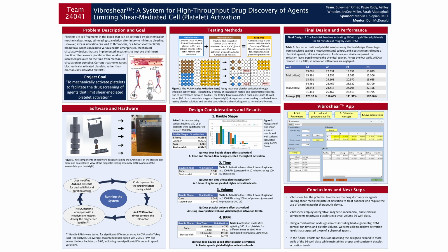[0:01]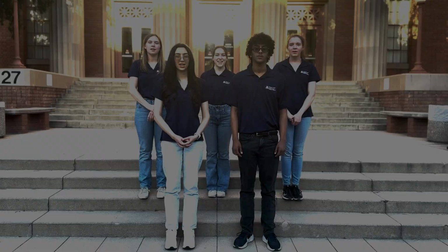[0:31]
Sully Elmer. I'm a biomedical engineering student, and I'm the team lead for this project. I'm Paige Rudy. I'm a biomedical engineering student, and I'm the procurement lead. I'm Ashley Wheeler. I'm a biomedical engineering student, and I'm the software lead. I'm JC Miller. I'm a biosystems engineering student, and I'm the experimental lead. I'm Farah El-Karaguli. I'm a chemical engineering student, and I'm the chemical lead. And we're Team 24041.
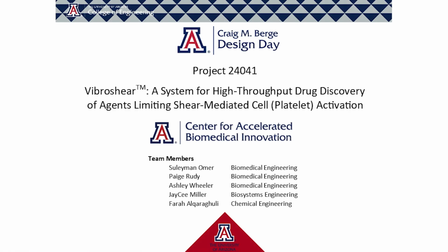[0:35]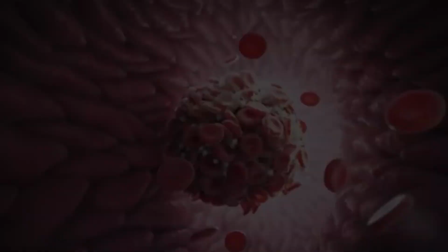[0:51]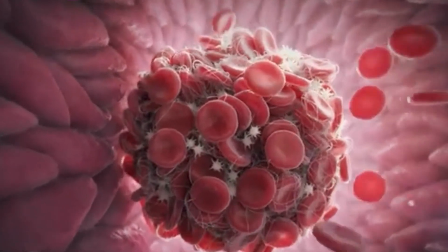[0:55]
JC, what was Team 24041 tasked with this year? We were tasked with creating a device for high-throughput drug screening of agents targeting mechanically activated platelets. Can you answer a couple questions about it? Sure. What are platelets? Platelets are cell fragments in blood, and platelet activation causes blood coagulation after an injury.
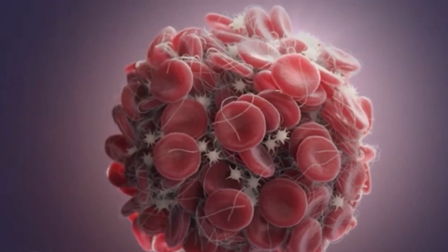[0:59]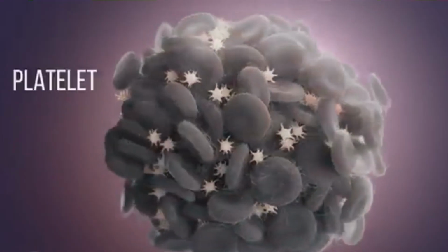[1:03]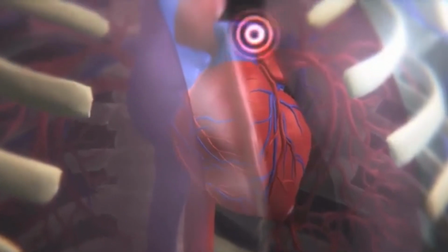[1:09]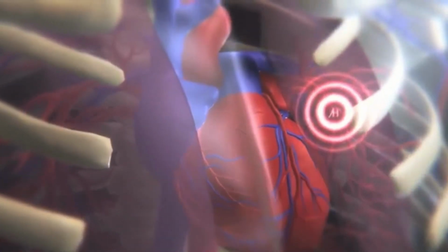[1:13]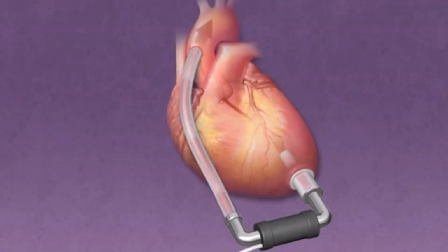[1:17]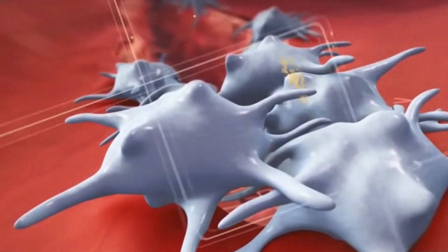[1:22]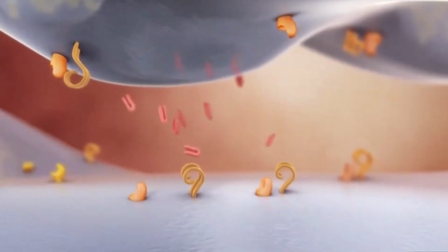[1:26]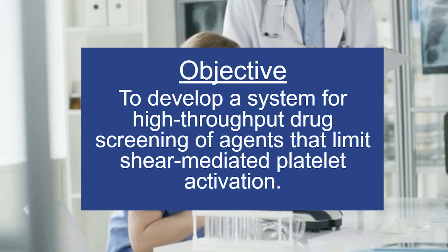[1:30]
Why is Team 24041 trying to mechanically activate platelets? Because shear-limiting drugs currently on the market only target biochemically activated platelets, and we want to allow lab technicians to assess the efficacy of drugs that target mechanically activated platelets. Thanks. Let's go over some specifics of the system.
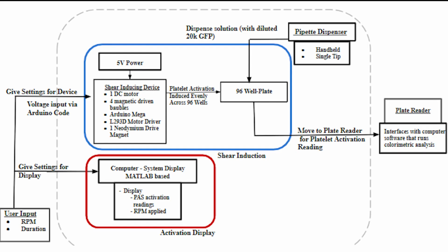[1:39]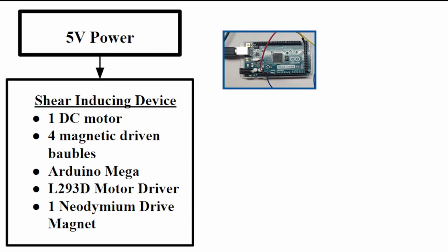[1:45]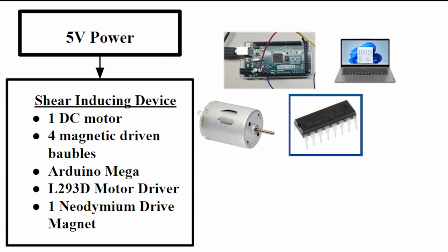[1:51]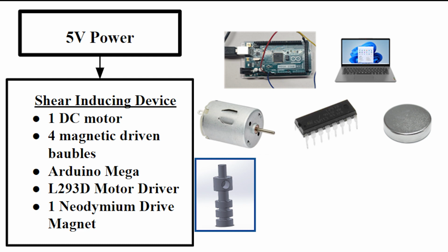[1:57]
There are two main components to the system, including the shear induction mechanism and the activation display. Starting with the former, the device consists of an Arduino Mega that interfaces with the user's laptop and device code, powering a DC motor through an L293D motor driver. Each motor is equipped with a neodymium drive magnet that induces rotation of the four magnetic bobbles suspended by ball bearings into the wells of the 96-well plate.
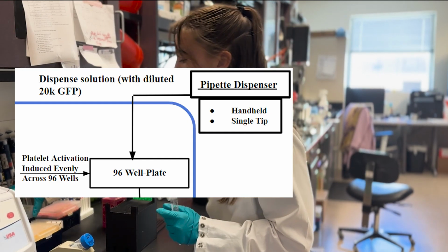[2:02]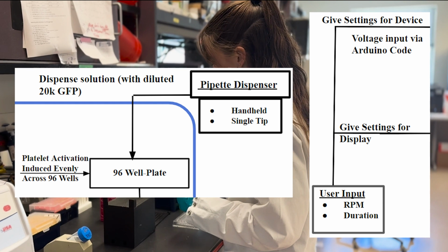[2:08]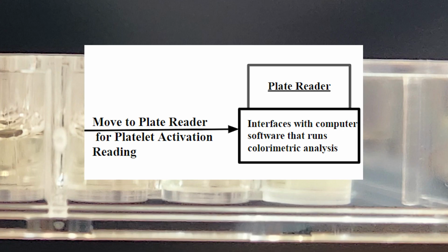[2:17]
When preparing to run the system, platelets are loaded into the wells using a handheld pipette, and the user will input RPM and run duration variables into the Arduino IDE code on the lab bench laptop. Testing is initiated by running the code. To read the level of platelet activation, the user should follow the steps of the platelet activation state or PASS assay, a colorimetric assay that JC will describe in a few minutes.
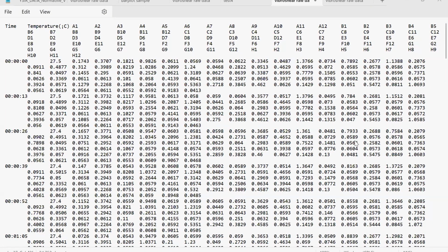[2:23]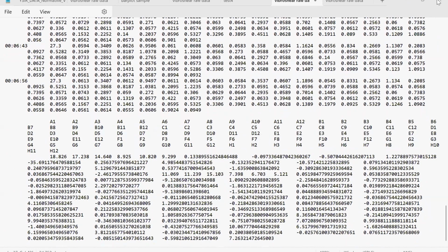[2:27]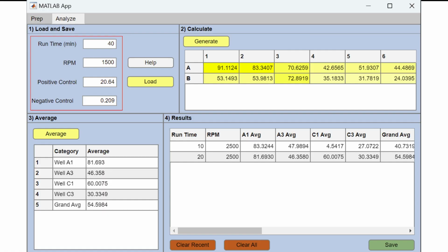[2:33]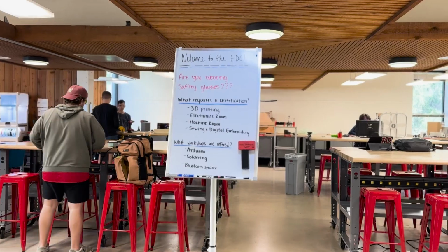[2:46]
At the end of this process, a plate reader will read the activation levels and the data can be exported as a TXT file. The data from multiple runs can be processed using the GUI, a MATLAB app. Users can input parameters including RPM, time, and positive or negative control readings. The app includes functionalities for loading raw data, normalizing and calculating raw and average activation levels, and saving manipulated data for further analysis. Now let's head over to the EDC to check in on Sully.
The EDC is where we fabricated the mechanical assembly of our Vibroshear system. Most of the physical components were manufactured through PLA 3D printing here. Let's take a close-up at each component.
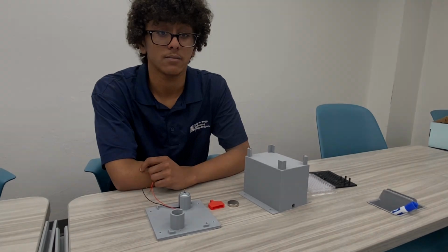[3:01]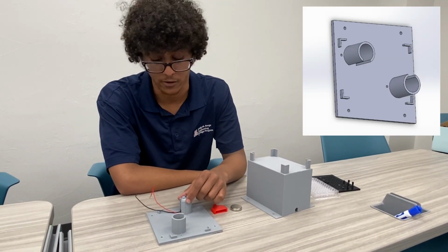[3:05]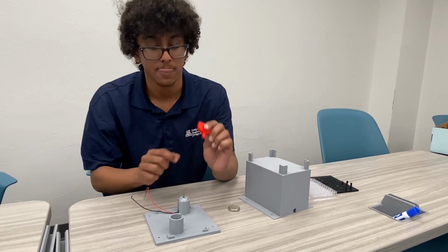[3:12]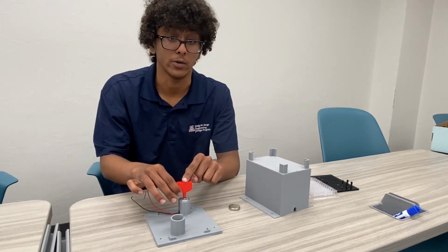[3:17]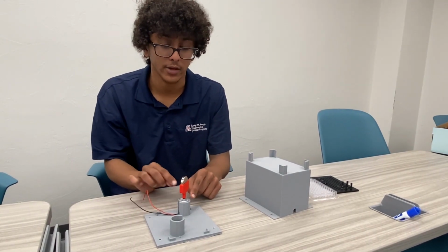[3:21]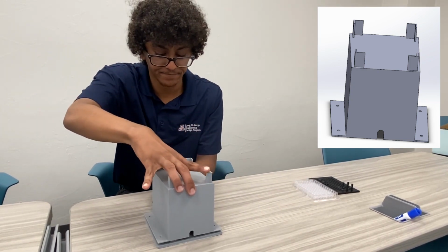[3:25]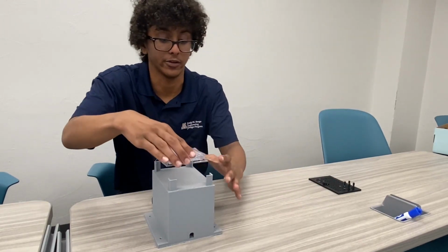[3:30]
Here's a magnetic stir housing fit with the bottom piece containing slots for the motors and wired connections to a breadboard. To attach the neodymium drive magnet to the motor, an external piece was designed with a hole cut out to fit the output shaft of the motor, and this attachment piece contains a tightly tolerant open space to house the drive magnet. Here's what the motor magnet assembly looks like. Naturally, there's also a top component to enclose the housing with ridges along the corners of the top that securely carry the 96-well plate during the device's use.
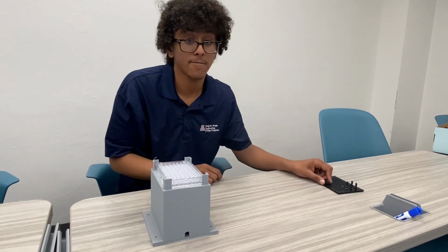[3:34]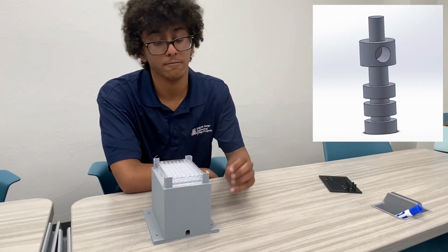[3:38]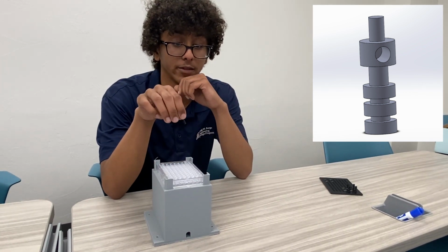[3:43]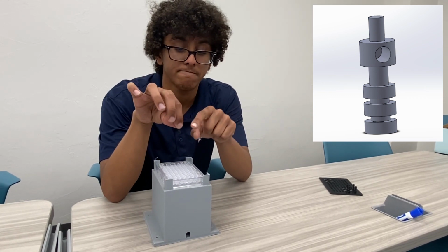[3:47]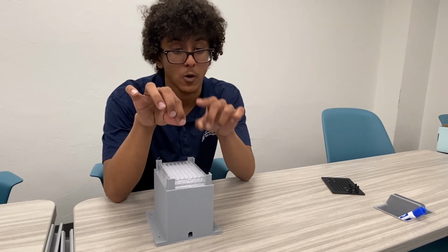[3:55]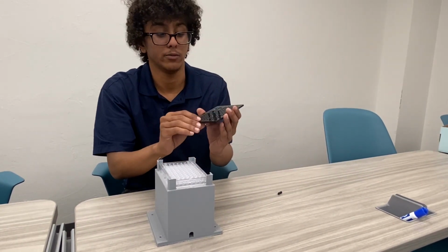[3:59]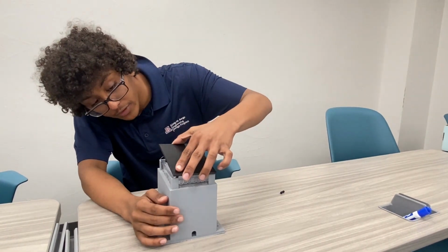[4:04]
Outside of the housing, something has to respond to the drive magnets to impart shear in the fluid within the wells. That takes us to the spinning bobble piece, responsible for mechanically agitating platelets. After several prototypes, here's the final model used for the bobble, 3 discs stacked on top of each other with space between to trap the fluid within. In cylindrical shape to maximize surface area, ensuring abrasive collisions with the surface of the piece consistently. There are 4 of these bobbles embedded within the plate lid, and here's how the whole assembly comes together.
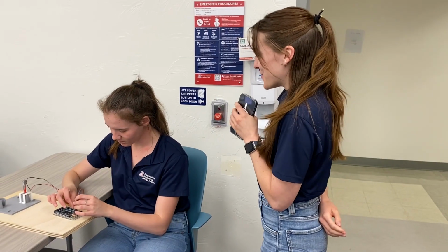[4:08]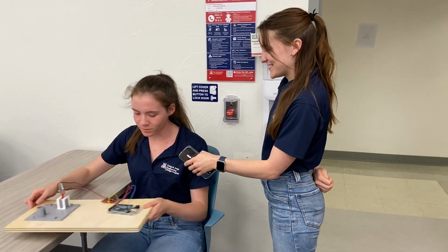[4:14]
Hey Ashley, what are you working on? I'm actually working on the electrical components of the Vibroshear system. Oh wow, can I see more? Yeah, let me show you. Alright, let's go into how we get this device up and running.
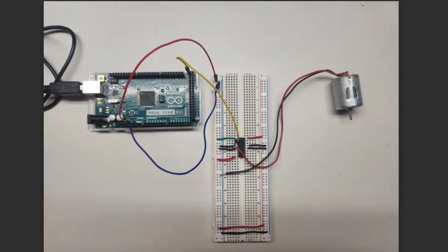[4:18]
To start, I want to note that a breadboard is used for simplicity reasons, but the actual solid board can be seen in the top left-hand corner.
Now let's begin with the Arduino Mega, which is a component of the electrical system allowing for connection between the computer and motor for trial runs. For the Arduino, we have connections made to an L293D motor driver. What this motor driver does is control the DC motor.
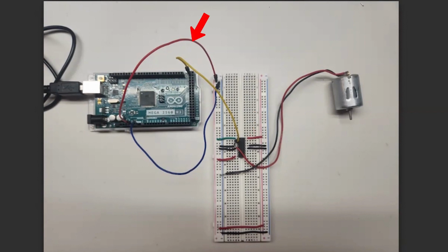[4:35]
To do so, power from an external power source, in our case the Arduino, is supplied. Additionally, for communication between the motor and the computer, a total of 4 connections are made to allow for switching the motor on and off, as well as feed the voltage into it for speed control.
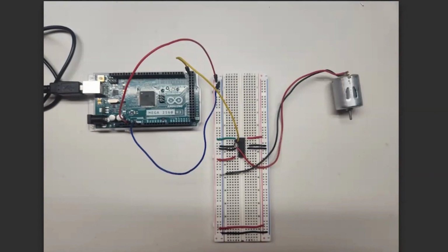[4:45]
Now let's move into a snippet of our code. In this code, you'll see that the connections are established at the beginning, and the only portion of the code that needs to be changed by the user is the duration of the delay, which corresponds to the duration of the trial. A user manual page is provided for the user's convenience on this to simplify the process in the final report.
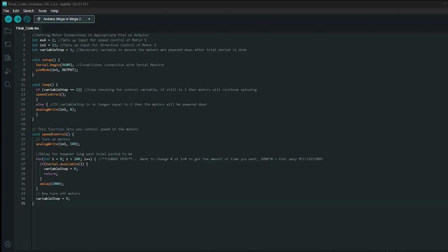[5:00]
Lastly, if during a trial a user needs to stop the process by any means, they can simply type into the serial monitor 0 and the code will automatically stop, just in case there's any issue that may have arisen during the trial.
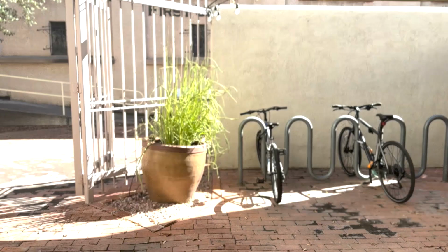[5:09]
Hey JC, where are you headed? Oh, I'm actually headed to the lab to do some experiments.
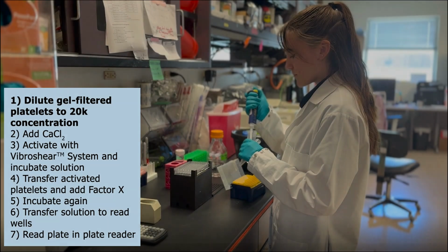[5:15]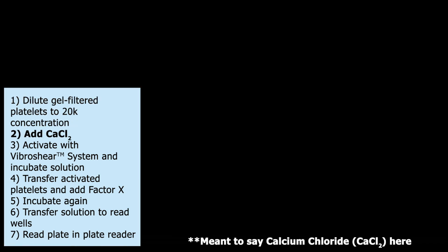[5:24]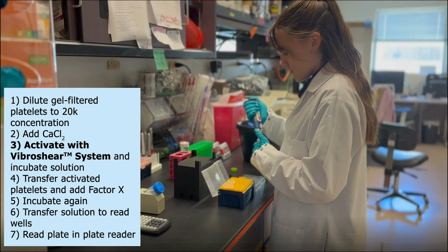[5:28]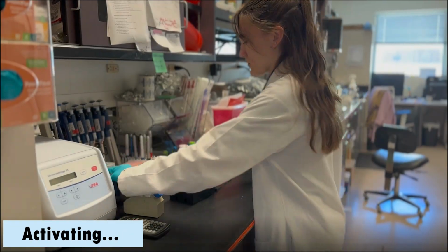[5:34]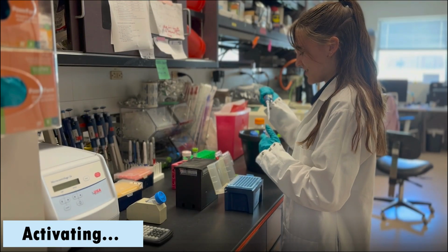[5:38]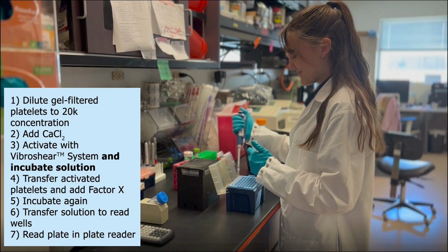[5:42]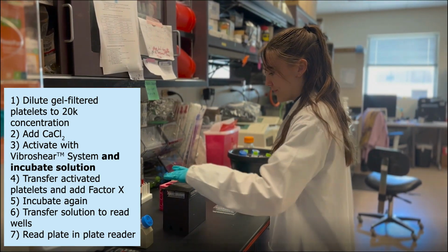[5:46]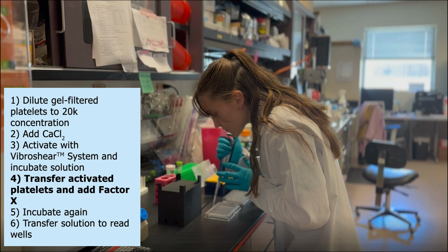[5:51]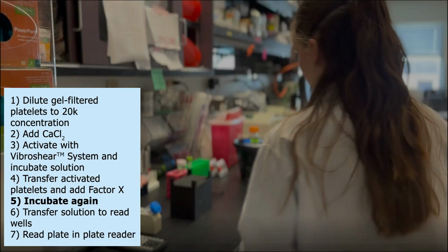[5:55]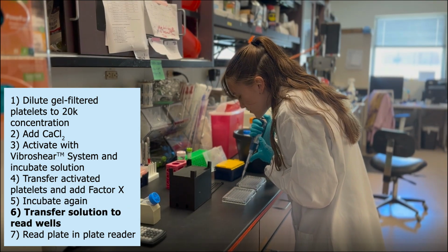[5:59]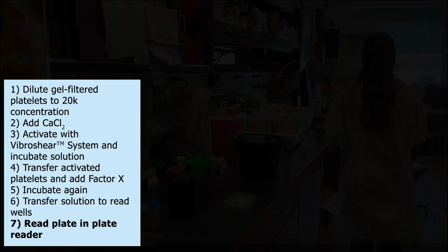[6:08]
We then need to incubate our incubation solution in a water bath at 37 degrees Celsius. We'll add the activated platelets to this along with the reagent factor 10 and incubate again. After filling our read plate with the well solution, we'll transfer the activated platelet solution to the read area and finally read the plate.
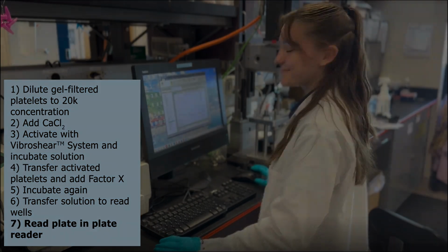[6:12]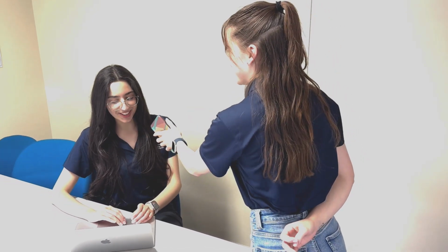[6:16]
Sarah, what's your favorite application to use? I'm actually using it right now. Let me show you.
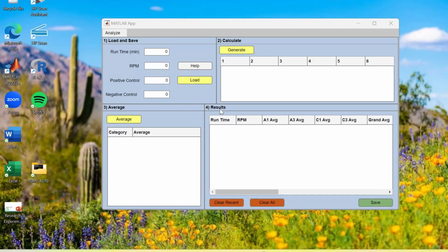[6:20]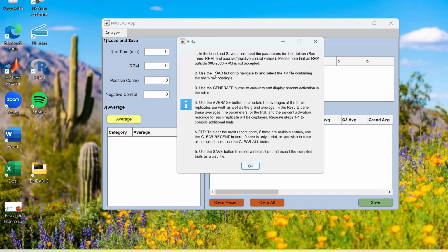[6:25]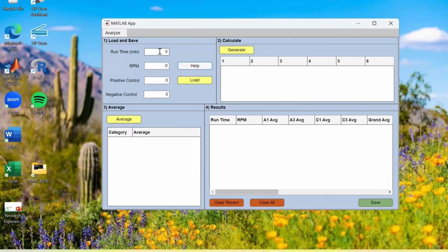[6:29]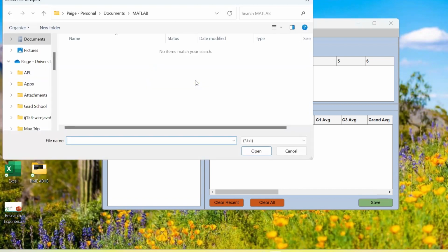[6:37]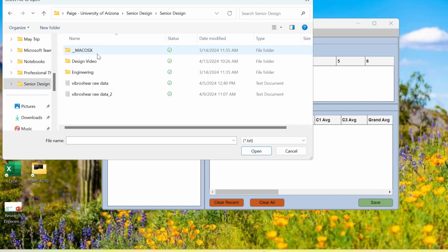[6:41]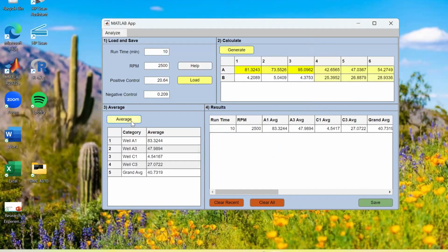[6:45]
After the device is finished running, the user can export a TXT file from the plate reader with the raw data. In the Analyze tab, the application accepts parameters specific to the run, including runtime, RPM, and positive and negative control readings for normalization. The exported TXT file can be imported using the Load button, and percent activation calculated using the Generate button. The Average button calculates the average of the 3 replicates for each well and the grand average. All results for that run are returned to the results section.
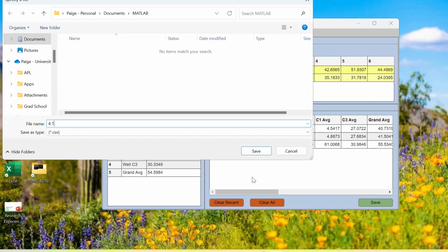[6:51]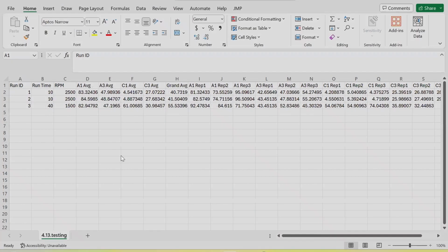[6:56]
This process can be repeated for however many files the user likes. If the user makes a mistake, they can clear the most recent run or clear all. The Save button saves all the displayed data to a CSV file for further analysis.
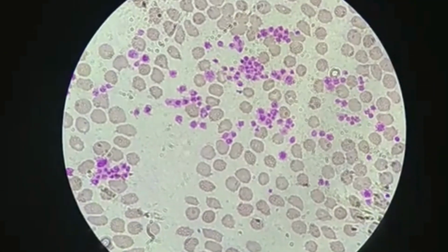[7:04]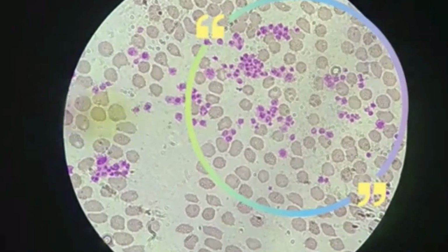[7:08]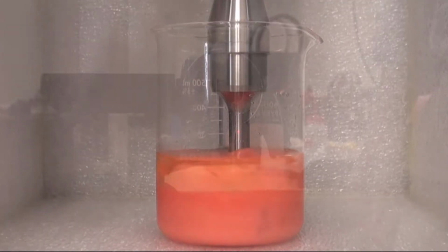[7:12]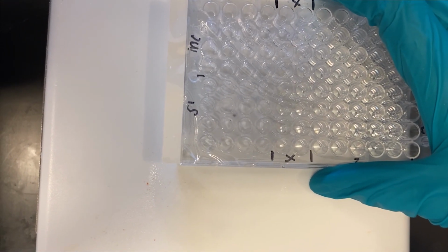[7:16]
Now, let's take a look at how we got to our final design. Platelet activation levels of 70% or greater indicate that platelets are fully activated. Techs in Slepian's lab usually use high-power machines to activate platelets for their testing. We wanted to downscale this to a 96 well plate in order to be able to test a large amount of biological compounds at once.
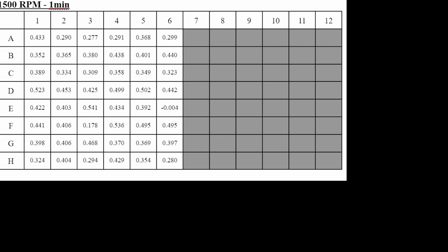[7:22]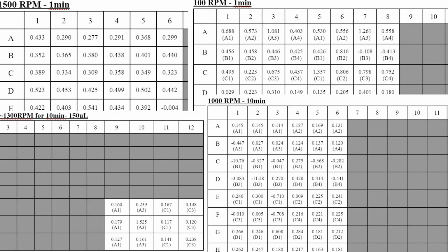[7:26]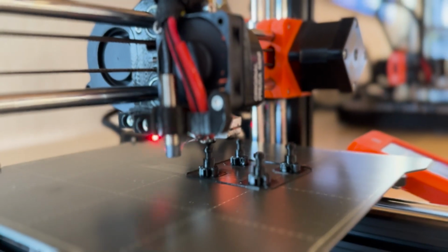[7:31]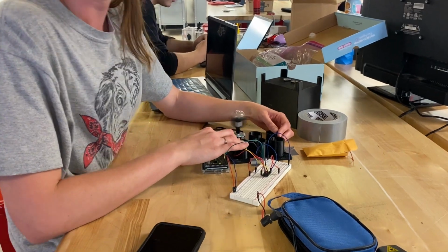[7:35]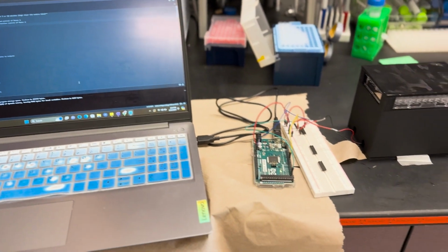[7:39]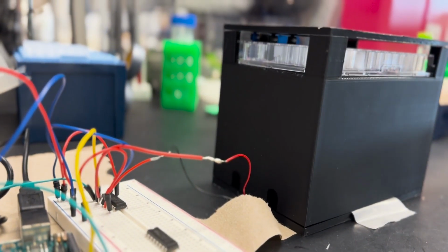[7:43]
We originally tested on a magnetic stirring device and got really low activation. So we tried changing our independent variables to determine the most effective parameters for activation. These variables included bobble design, runtime, volume of the wells and platelets, rotational speed, and adjusting the protocol with biochemical additives. Finally, we were able to get the perfect combination of these variables and determine the protocol for optimal platelet activation.
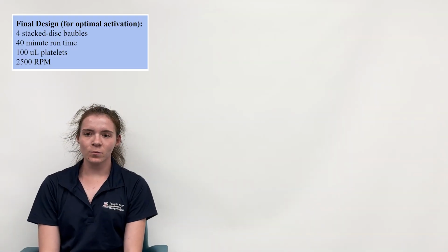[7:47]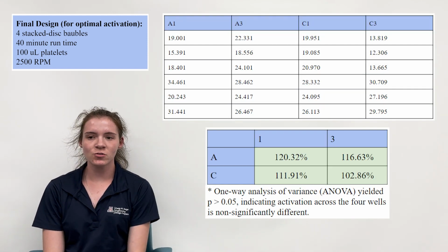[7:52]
Now, knowing the whole project, we can briefly discuss the final results we received. On the right-hand side, you'll see an average of the trial runs with the final device. Due to constraints within the lab, the gold standard for 100% platelet activation was to use a chemical agonist known as calcium ionophores. That said, with the chemical agonist, 20% was considered fully activated for our testing purposes. Our data exceeded the gold standard, indicating that our device was successfully activating platelets in a mechanical manner.
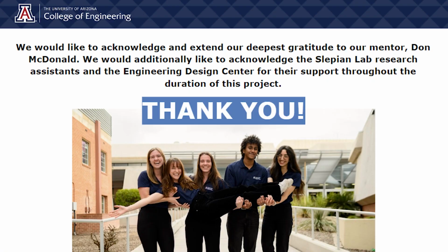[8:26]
With that, throughout the last 8 months, we've worked hard to create a proof of concept device that is aimed at generating mechanical shear onto platelets with a high throughput setting of a 96 well plate. Our product serves to pave the way for future research on drugs that limit mechanical platelet activation. Overall, we'd like to thank the Slepian Lab and our mentor Don McDonald for their support.